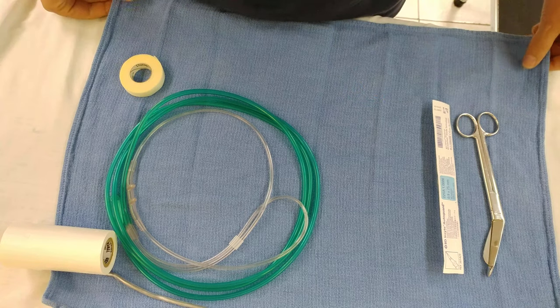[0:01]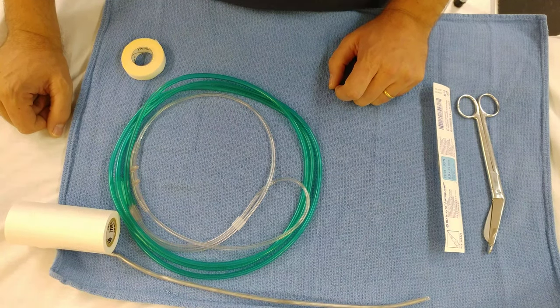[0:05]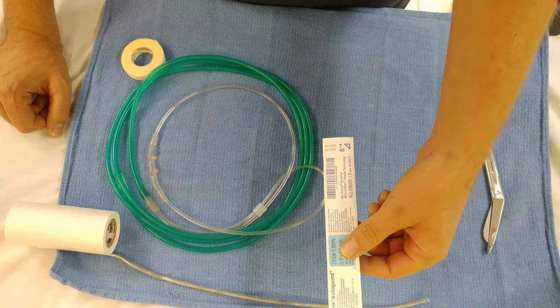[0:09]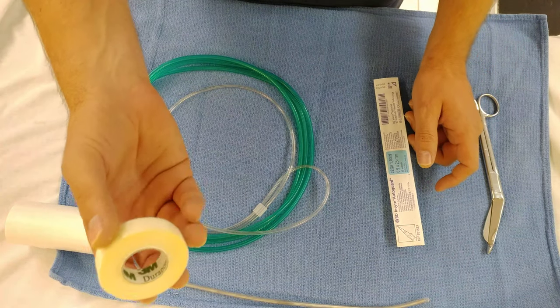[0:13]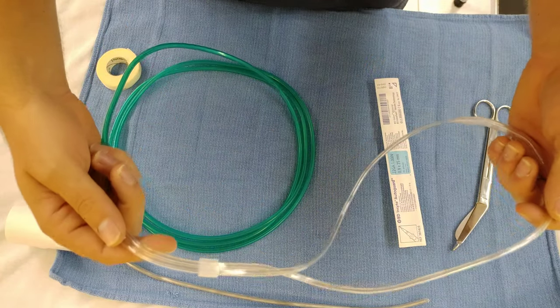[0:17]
All right. So in order to make the Batoon rocket, you just need a few things. Stylet, nasal cannula, 22 gauge IV, and some 3-inch tape and half inch tape, and scissors. So to do this, it's pretty simple. I'm gonna see if I can keep this in the camera here.
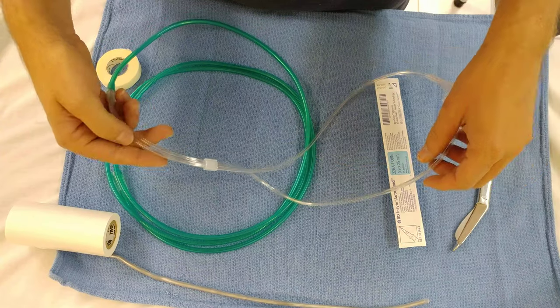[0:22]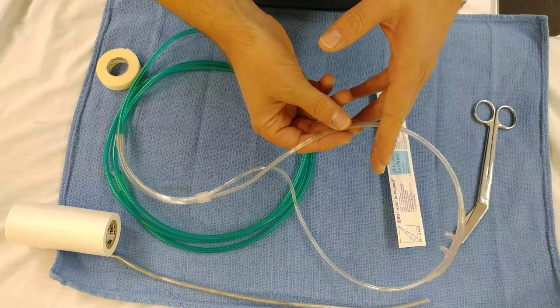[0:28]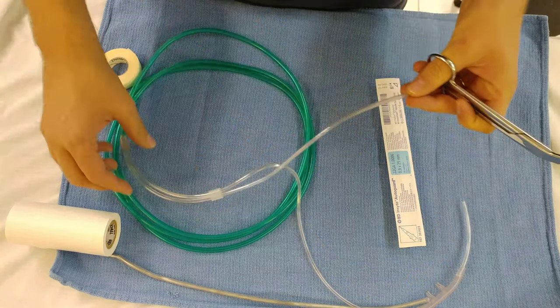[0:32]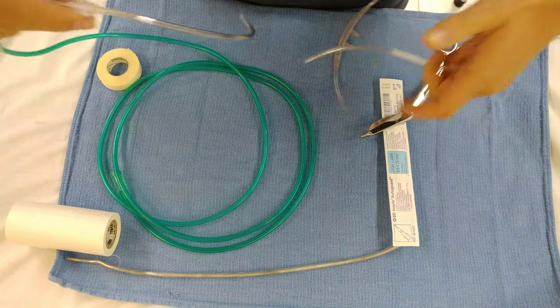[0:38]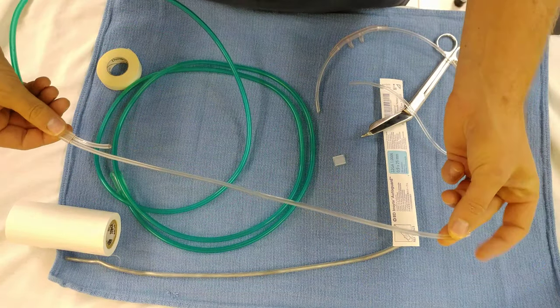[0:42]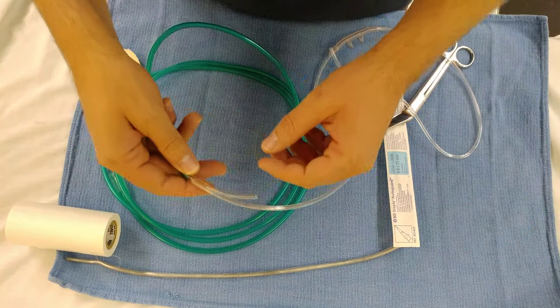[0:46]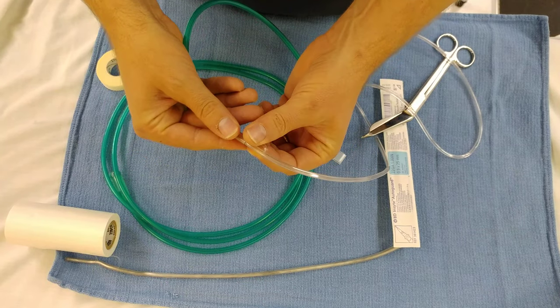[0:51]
What you wanna do is create like a spray nozzle out of one of the ends of this nasal cannula. So what you do, cut one end and cut the other end short. So you're left with just one like this. This might be a little long. I think it'll be all right. Then what you want to do is kink off the short end here like this.
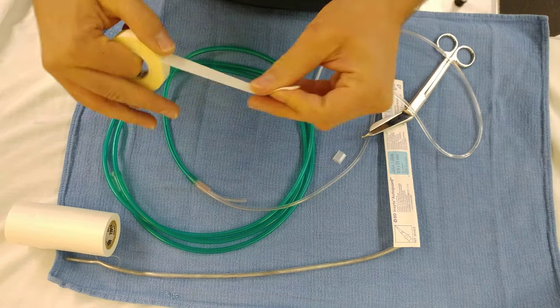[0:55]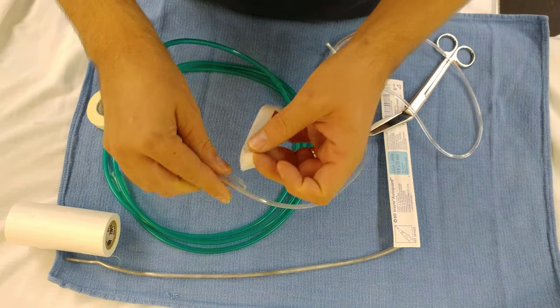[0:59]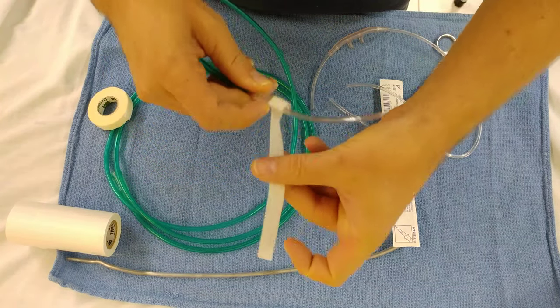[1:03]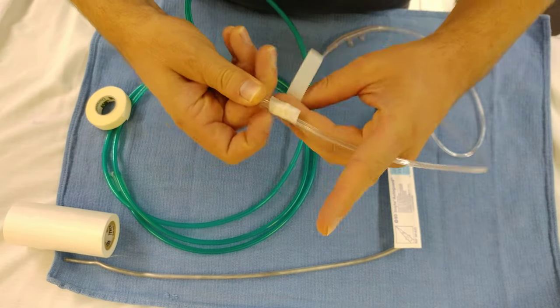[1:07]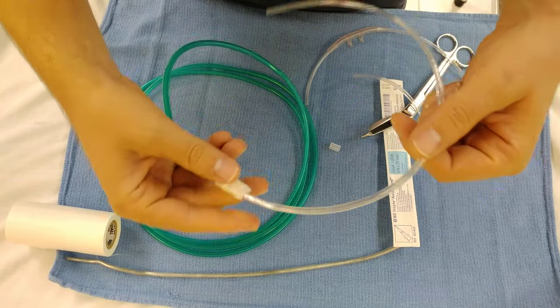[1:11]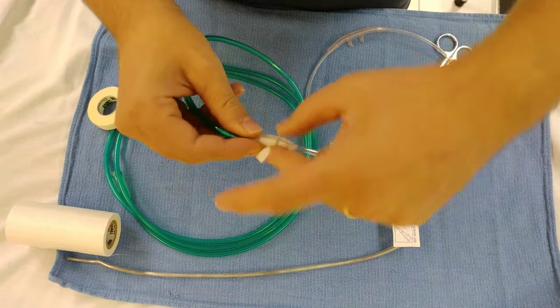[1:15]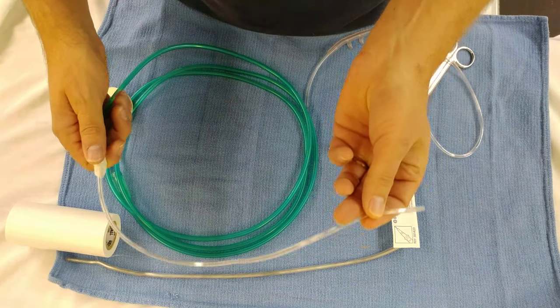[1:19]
So you grab some tape. That's pretty good. Okay, so that end is kinked off. Just use it all here. So now you just have one end here to spray.
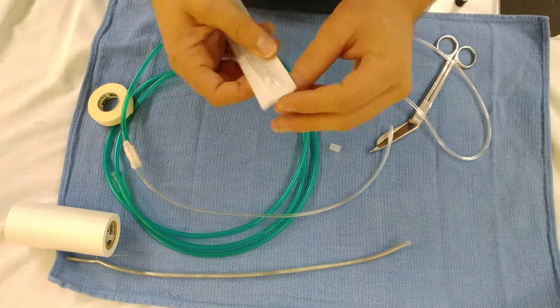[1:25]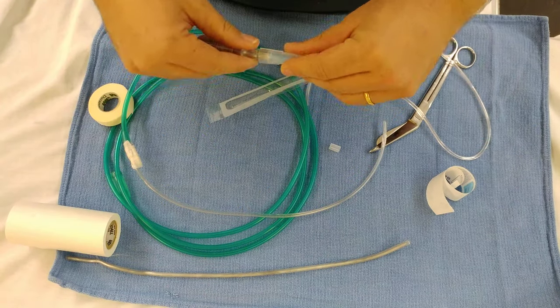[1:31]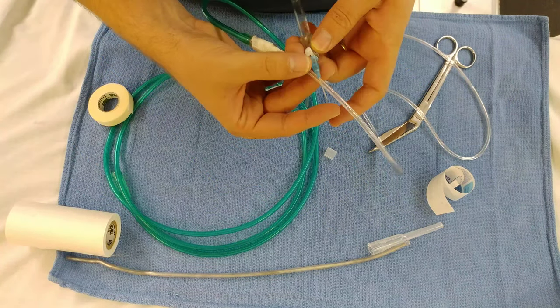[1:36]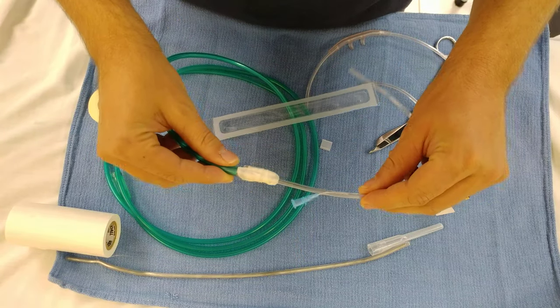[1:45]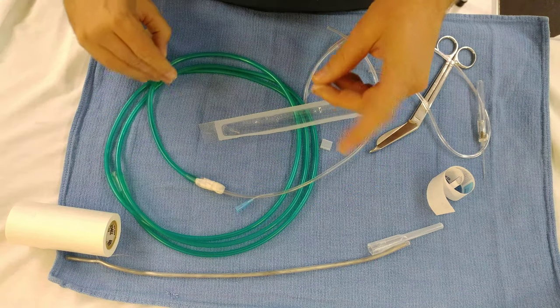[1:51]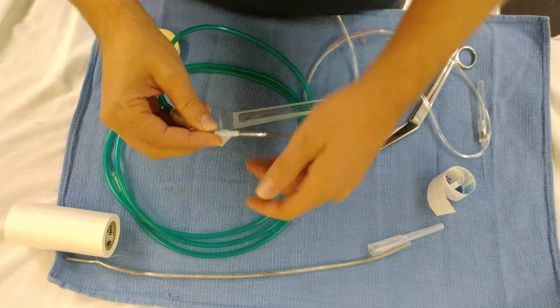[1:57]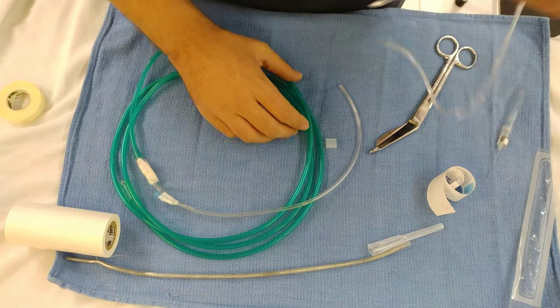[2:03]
Then you take your IV, your 22 gauge IV, and what you're going to do is you're going to stick it in the line here, kind of like you're cannulating a vein. Just like that. Then you can take some more tape and just kind of secure that down. We're almost done, actually.
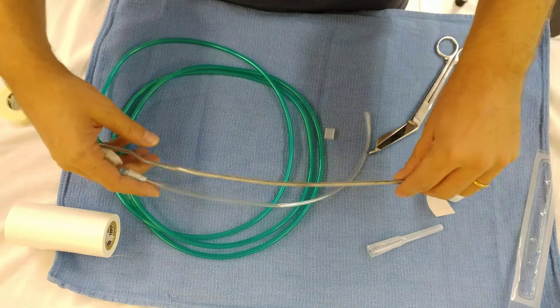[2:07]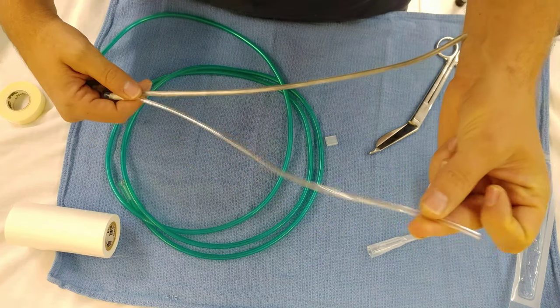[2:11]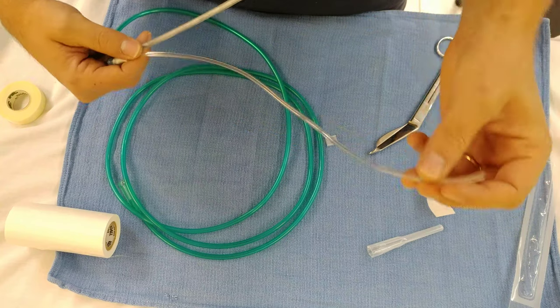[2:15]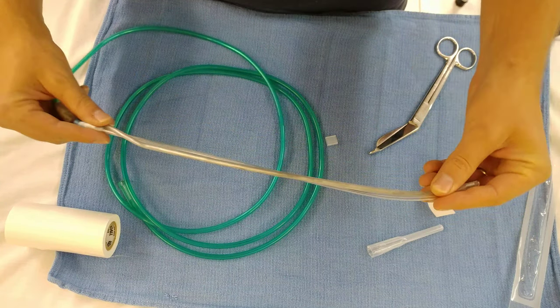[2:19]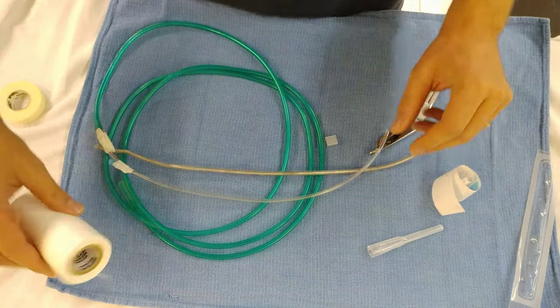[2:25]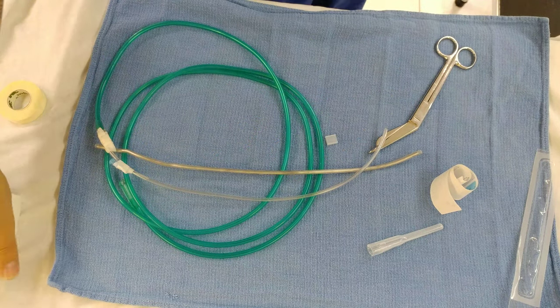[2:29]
Next step is just to provide some rigidity for this. I'm thinking I might try to use this actually in a nasal intubation and see if I can pass this and atomize, you know, down the nose. But if you're doing oral, putting a stylette on this is really handy to kind of make it form to the posterior oropharynx and all that. So that's where some tape comes in. Actually, I don't like this tape. I'm going to get some other tape.
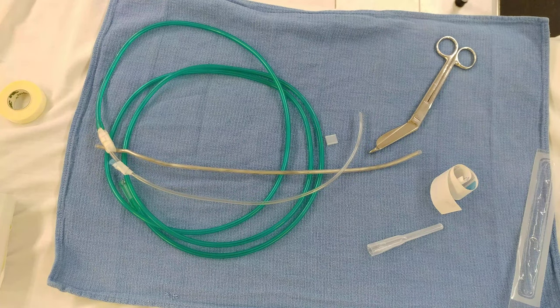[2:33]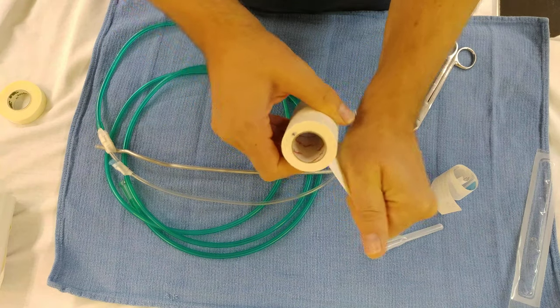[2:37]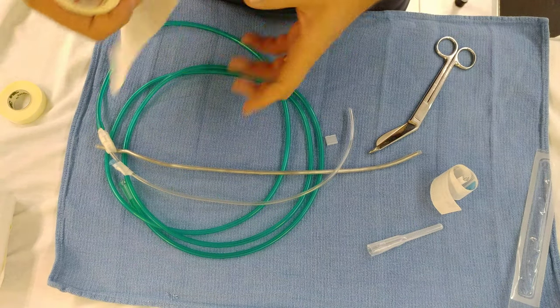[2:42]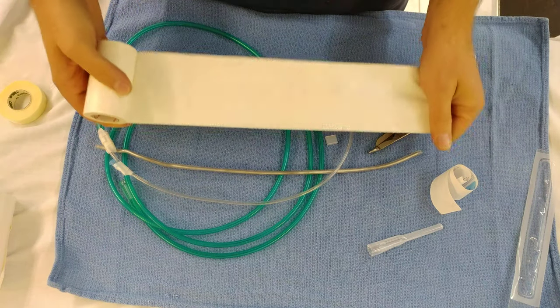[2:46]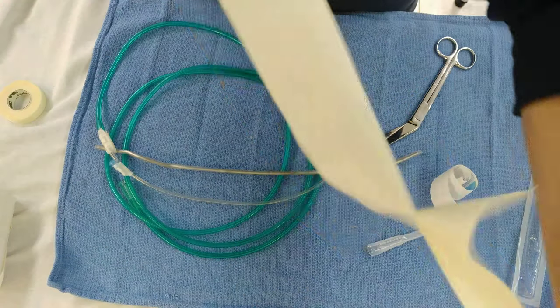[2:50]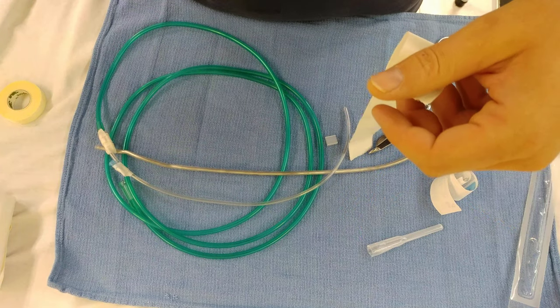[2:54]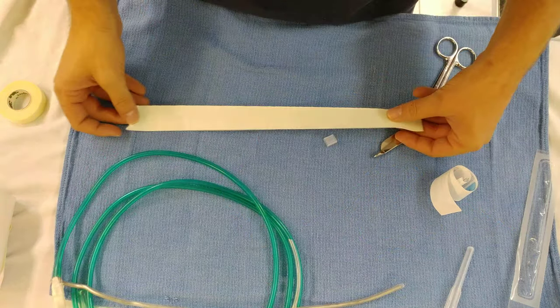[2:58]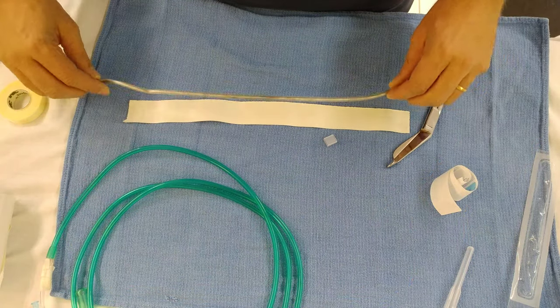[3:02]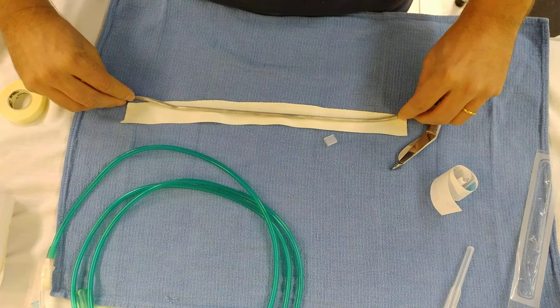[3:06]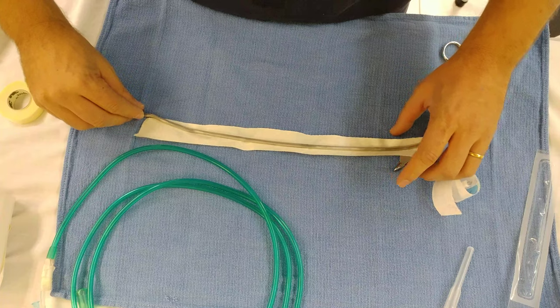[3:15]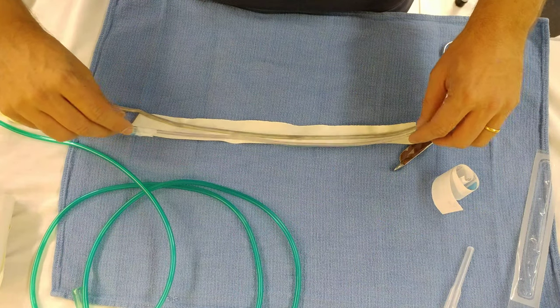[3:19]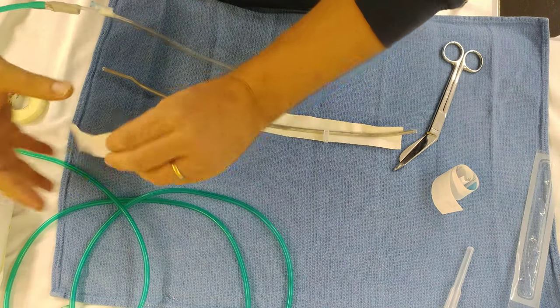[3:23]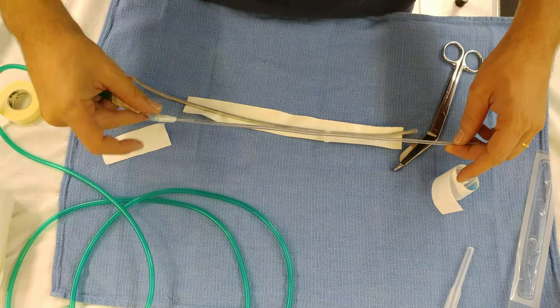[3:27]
Okay, because if I make this, I'm actually going to use it. Okay, so tear off a piece of tape about the length, and then I'm just going to tear off a piece of it, and we're going to lay this down like this, stick this like that, more or less. And then it's a little too long. It's a little shorter. Because you want this part sticking out here, so.
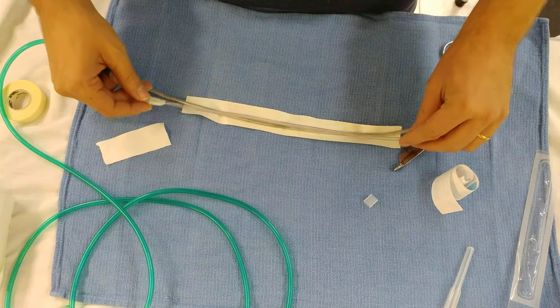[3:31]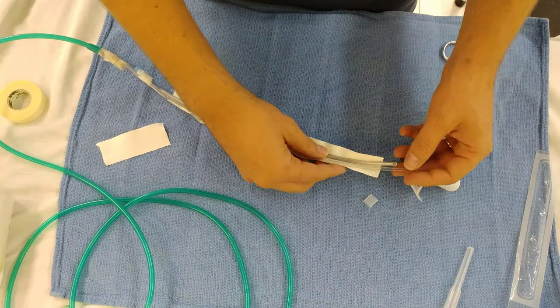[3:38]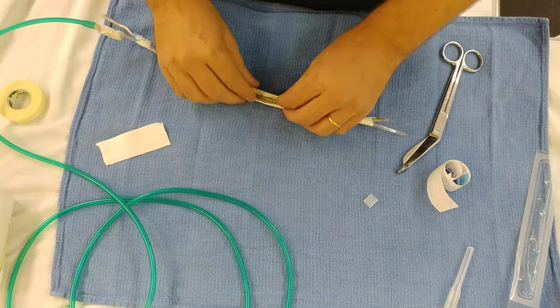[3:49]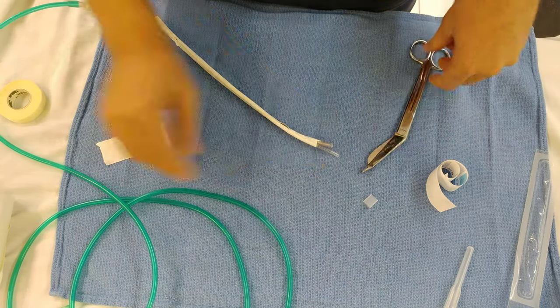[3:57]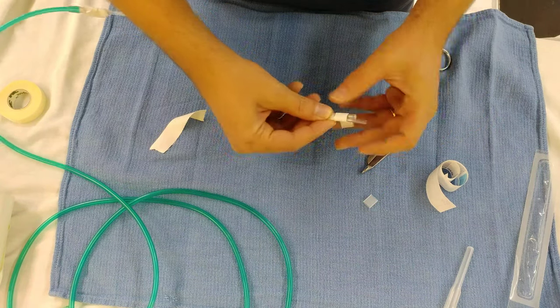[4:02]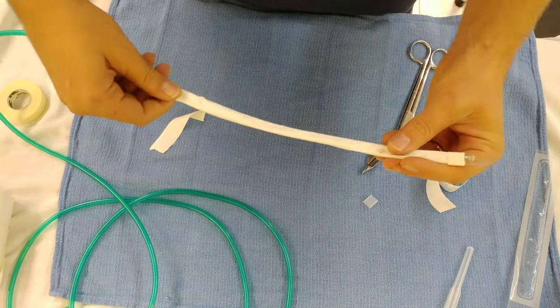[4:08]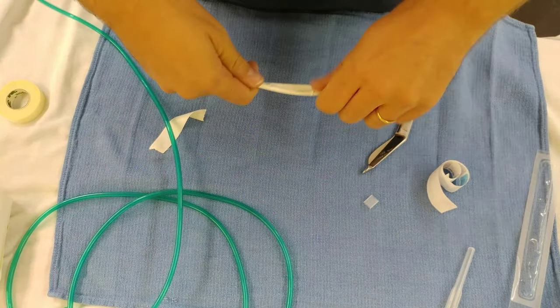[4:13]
You can have as much of this end out as you want, really. I don't know. To your preference, I guess. And then you just kind of roll it up here. That's pretty much it as far as that goes. So you can, you know, bend this kind of so you can get really deep, do sharp angles and stuff like that. It's pretty nice, you know.
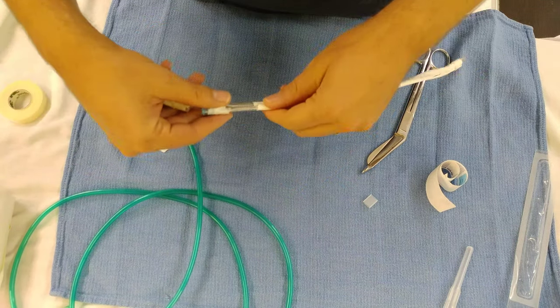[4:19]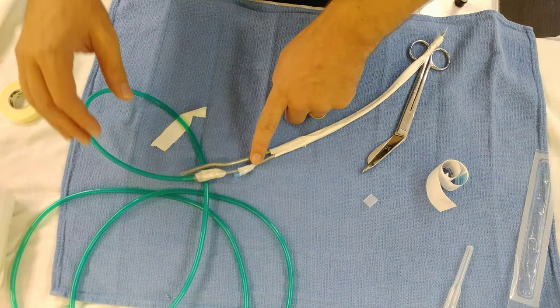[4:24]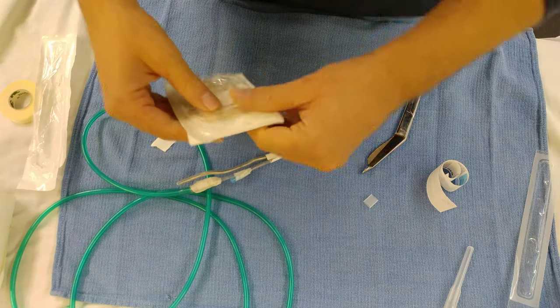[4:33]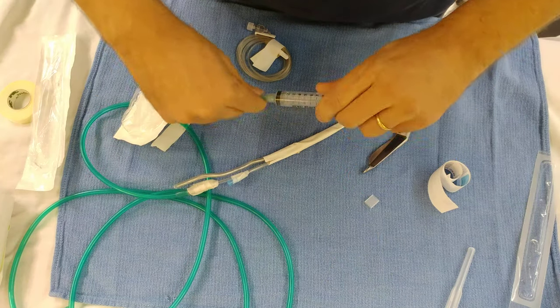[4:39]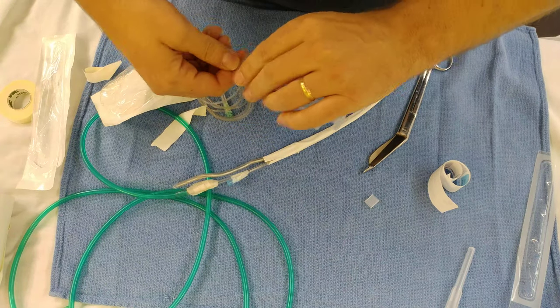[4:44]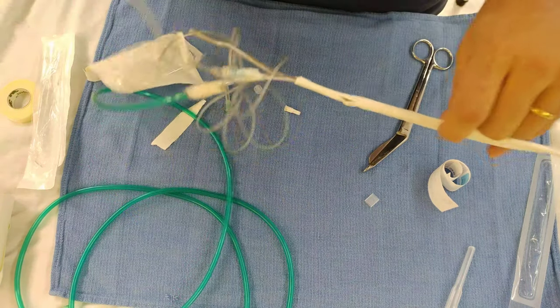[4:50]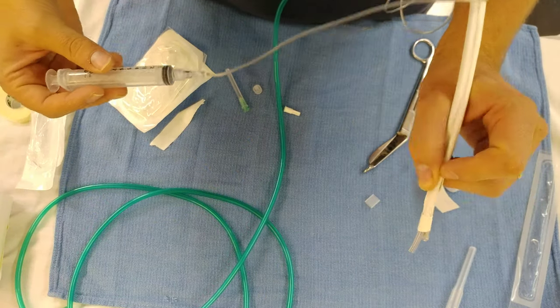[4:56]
And then what I've discovered after using this for a while is it's good to have a little extension on here. Let me show you how I set it up. So you'll draw up your lidocaine however much you're going to use. 5% seems to be pretty good. And then you'll attach your extension onto this so it's like this. And so that way you have this hand free and you can use this hand to kind of, you know, hold it like this or however you want to kind of guide it, and then this to inject.
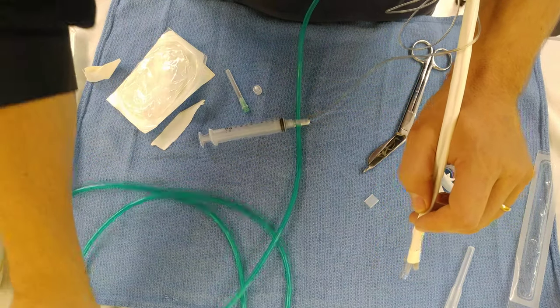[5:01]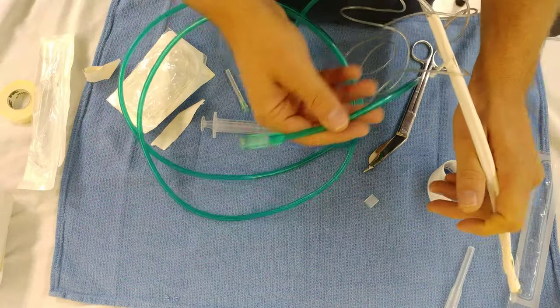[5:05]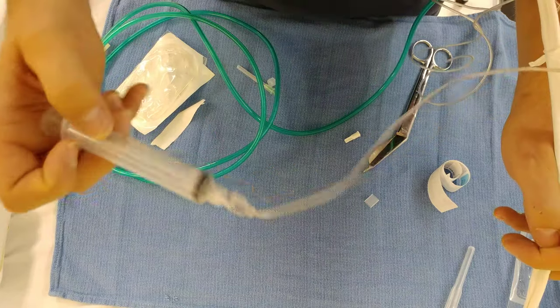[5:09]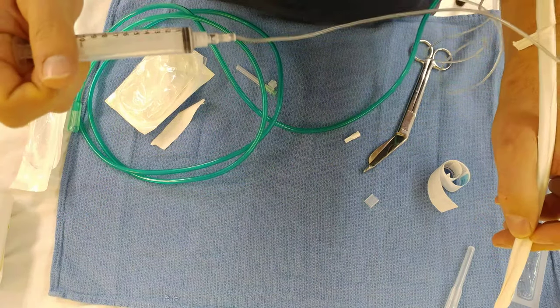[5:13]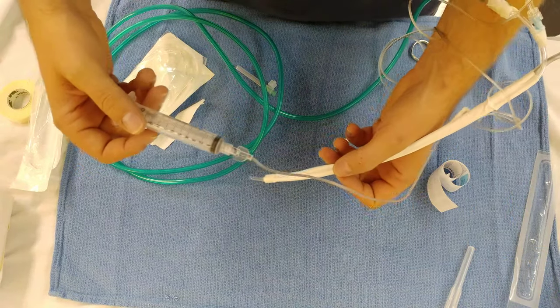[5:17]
What I do is on this end, I just hook it up to 15 liters of oxygen. And then in order to atomize, what you do is you just spray a little bit of this, like you just depress the syringe and, you know, it'll atomize as it comes out. So that's pretty much it. Pretty simple device, but it works really well.
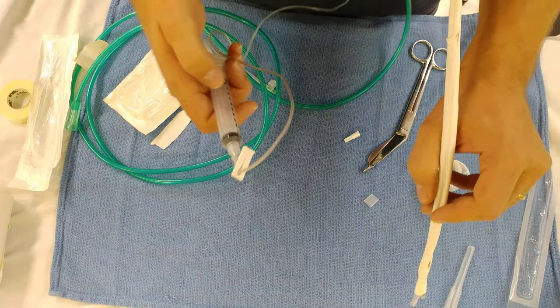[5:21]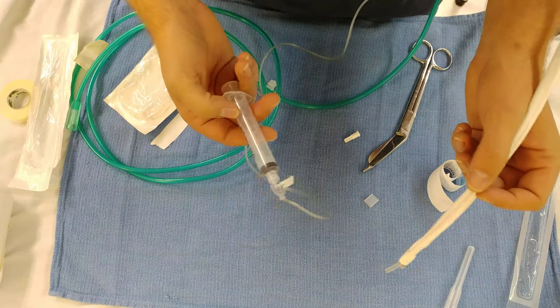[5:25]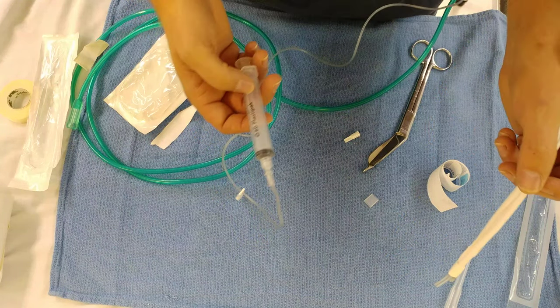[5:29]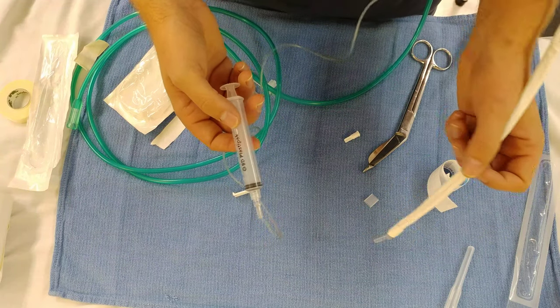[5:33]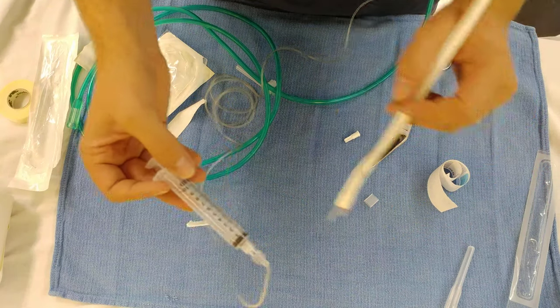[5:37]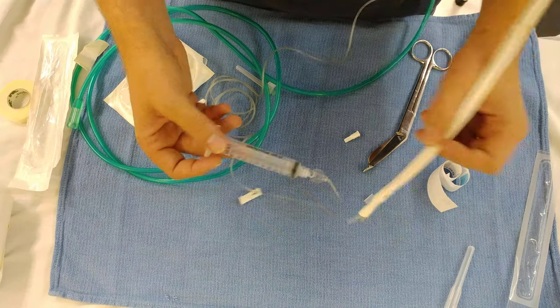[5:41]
I'm really happy. Some things that I found that works with this is if you inhale while you're really posterior, you'll hit the cords and you'll go past the cords and hit the trachea too. And I found that I've anesthetized down to the carina with this. So, and I'd say I use about 5 cc's more or less, give or take now. But it takes some practice. So there it is.